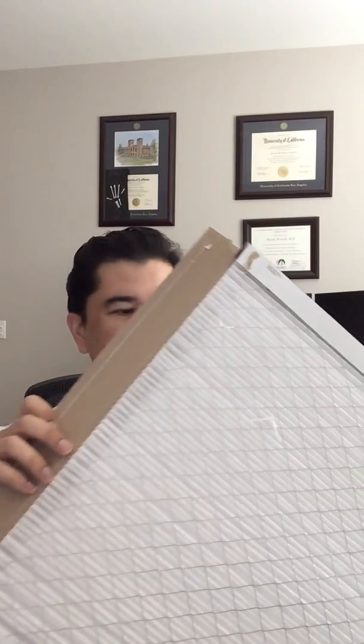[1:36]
So these are the materials you need. One, like I said, the Filtrete filter, and two, you will need some rubber bands, preferably flat ones. And then also got from Target one of these letter hanging folders, and that'll provide a bridge piece across your nose that will allow you to kind of customize your respirator for you.
So this is actually, my wife was able to provide this. This is a 3M N95 mask. And as you can see from this design, it is basically a long piece of fabric that's folded over itself multiple times. And then it has these type of closures here. And it also has a little metal portion here to adjust to your nose. And then finally, you also have the rubber bands that are stuck together with a staple on the sides.
Okay. So to start off, you just take these Filtretes and you just peel this thing off like here. And once that's peeled off, it's actually not too bad. There is this wire, chicken wire, that's stuck onto it. You can just grab part of it and just pull it right off, very simply. Just like this.
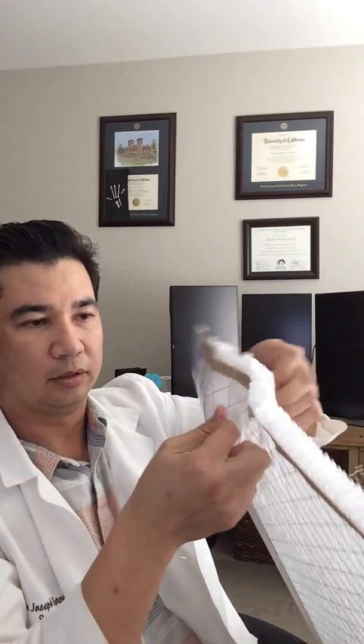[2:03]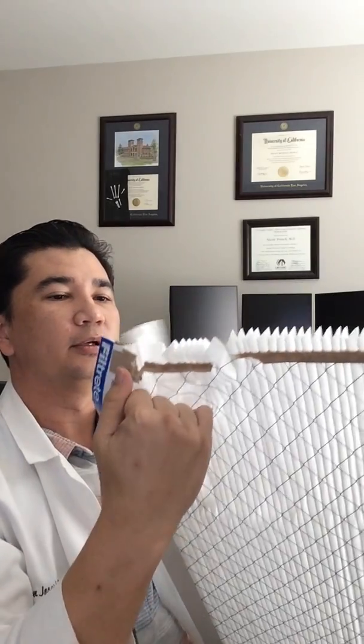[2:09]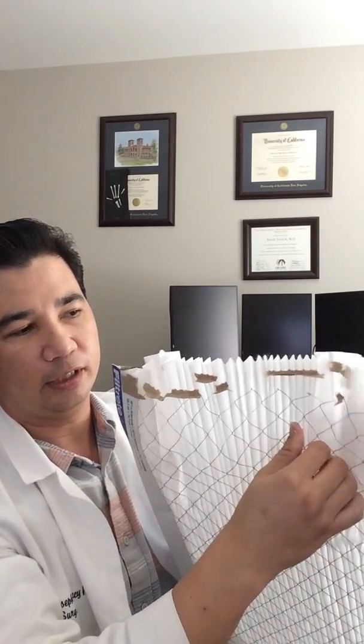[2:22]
Alright. So I've got access to the fabric now. And peeled it off. Just be mindful that some of this wire can also cut your fingers, so if you're concerned about that, you might want to wear gloves, things along those lines. At least the edges here, those are what are going to cut you.
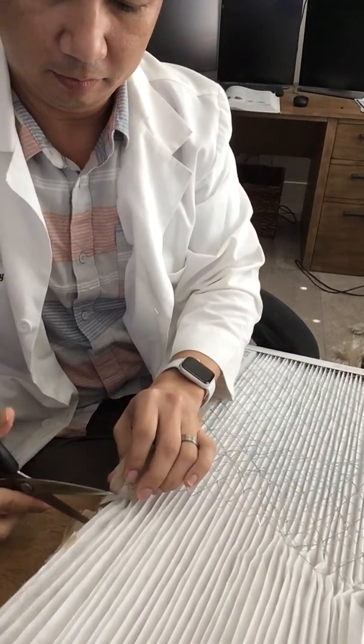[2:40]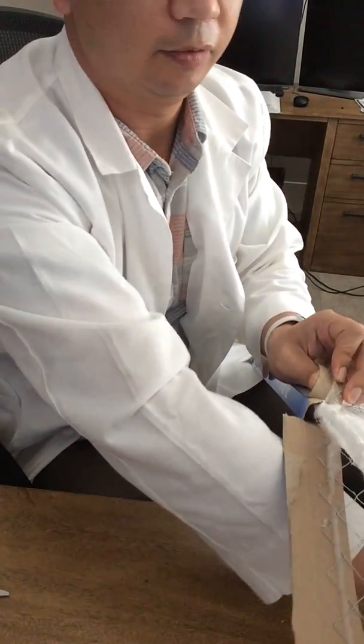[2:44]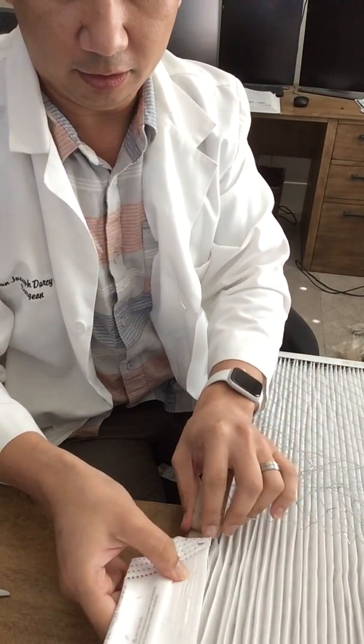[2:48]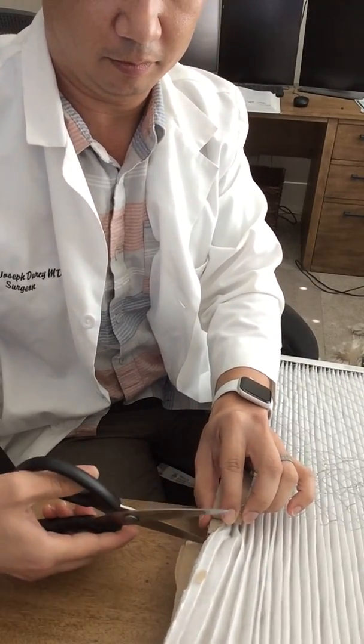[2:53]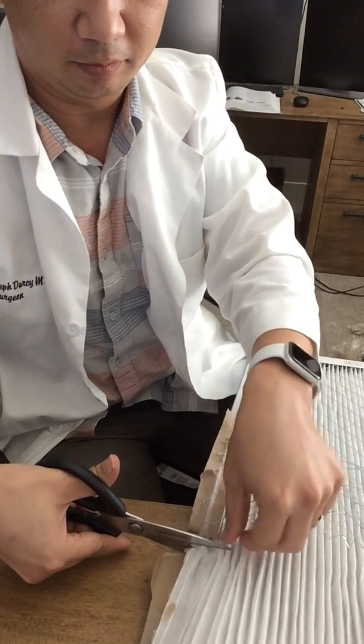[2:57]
Okay. So I have this out, and I'm going out 9 inches. I cut through the 9 inches, which I'm just going to mark as right here. I'm going to cut through.
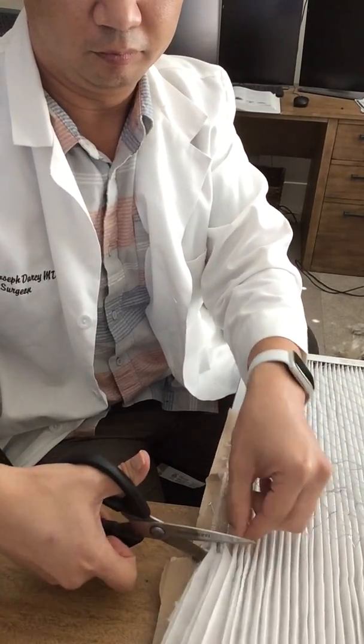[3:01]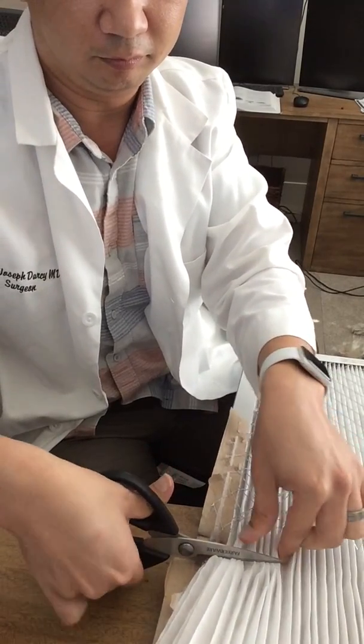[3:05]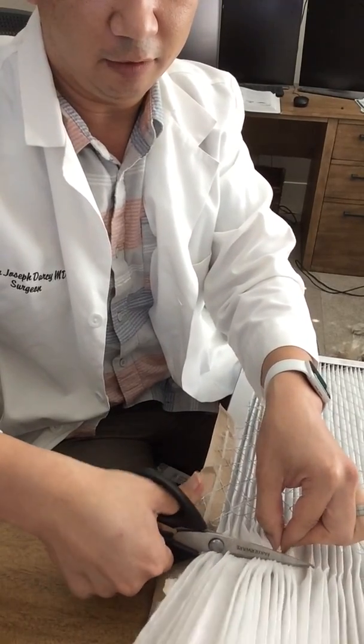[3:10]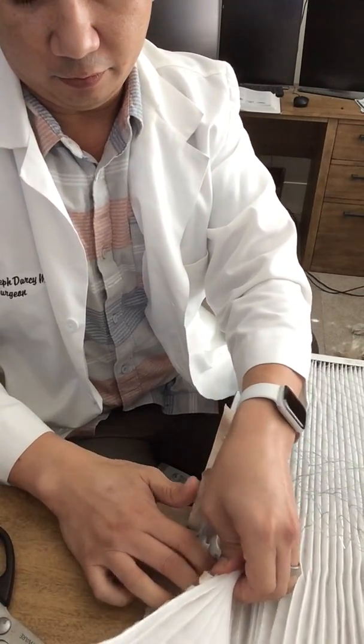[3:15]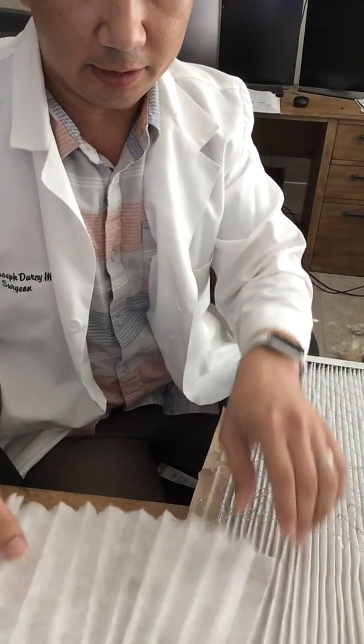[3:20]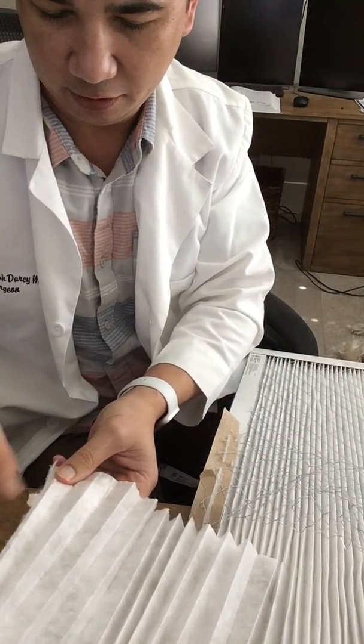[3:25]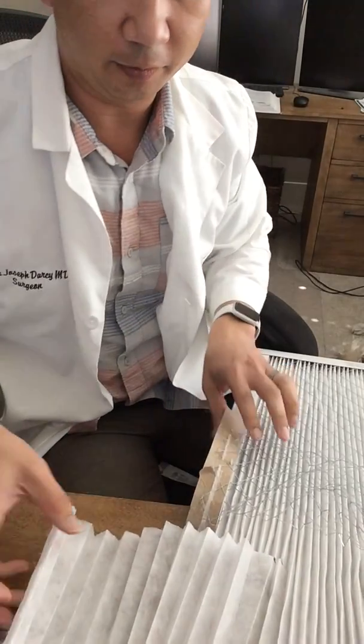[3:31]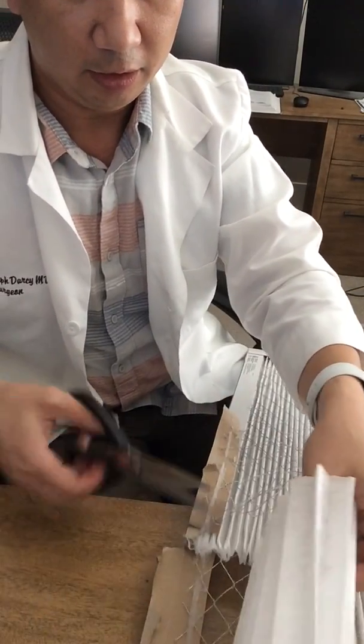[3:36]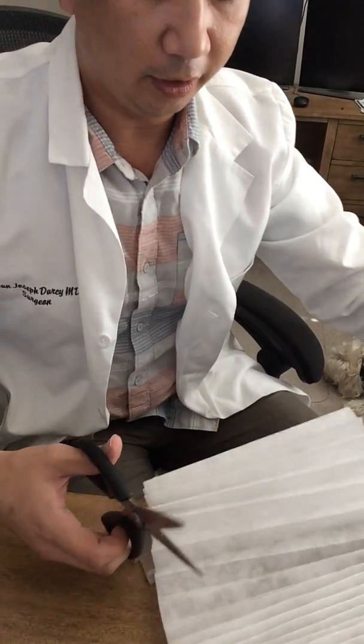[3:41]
Now, there was some interesting controversy that I overheard on the news about distributors, the 3M selling to other countries, or for United States. Well, you know, it's a pretty difficult situation for all individuals in regards to things. And I think that at least you will be safe during this time when it's really hard, when other countries or entities are outbidding you in terms of getting these masks.
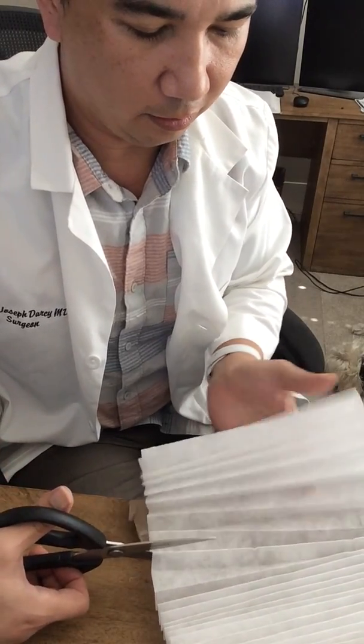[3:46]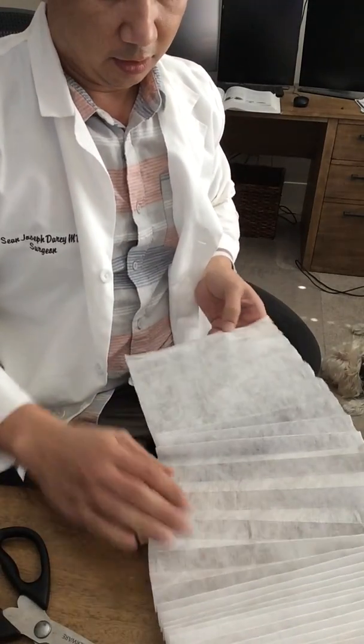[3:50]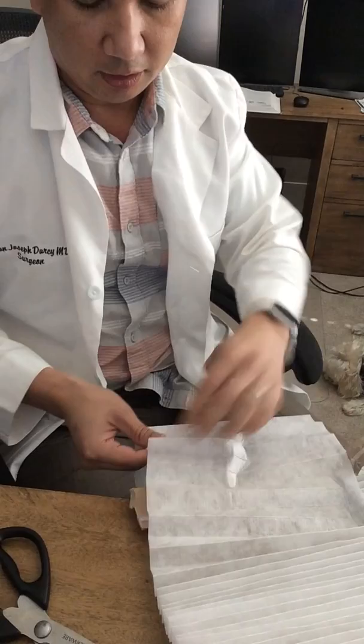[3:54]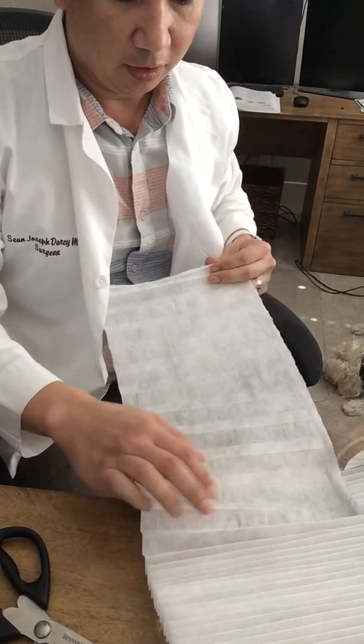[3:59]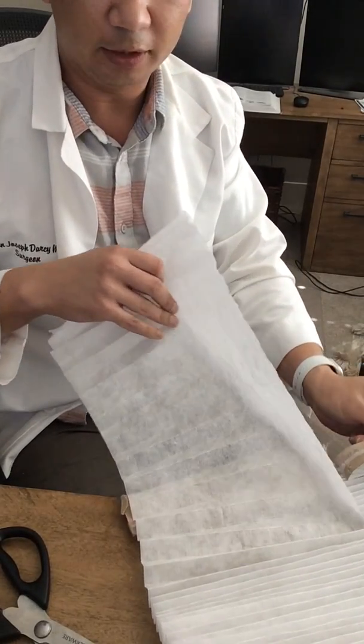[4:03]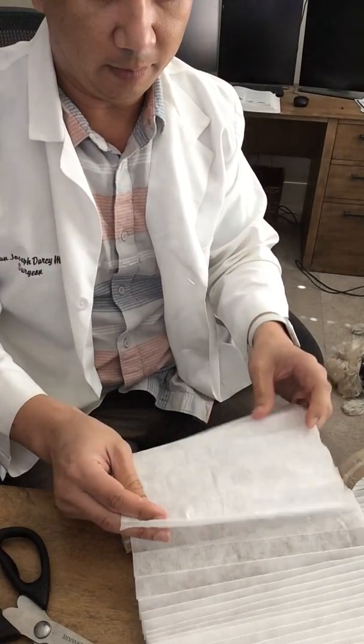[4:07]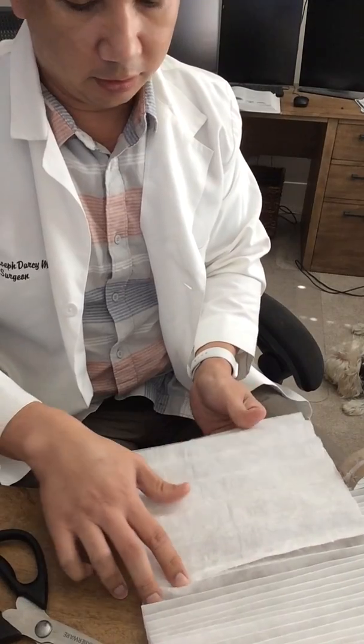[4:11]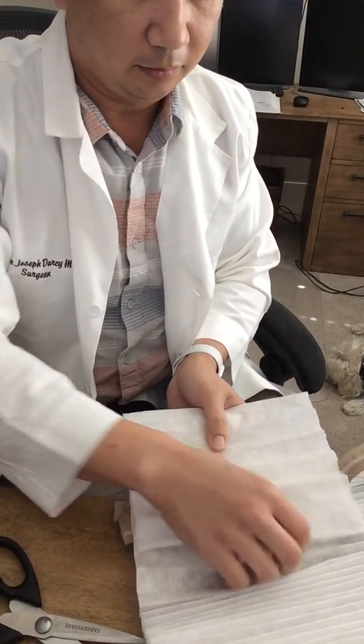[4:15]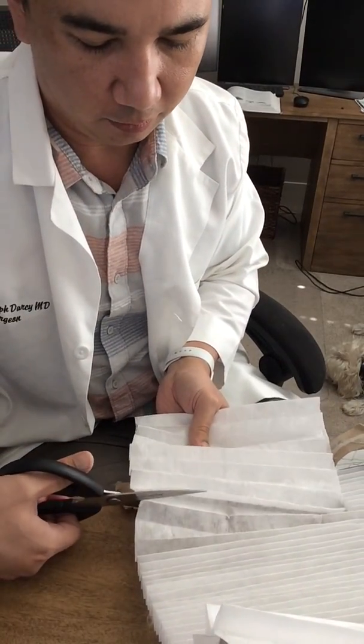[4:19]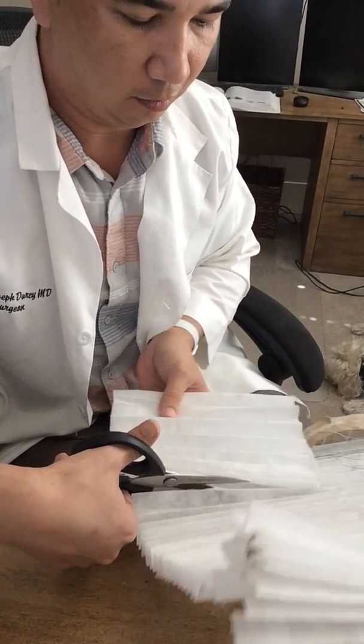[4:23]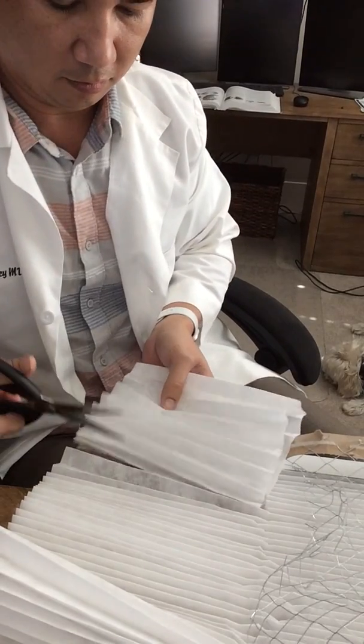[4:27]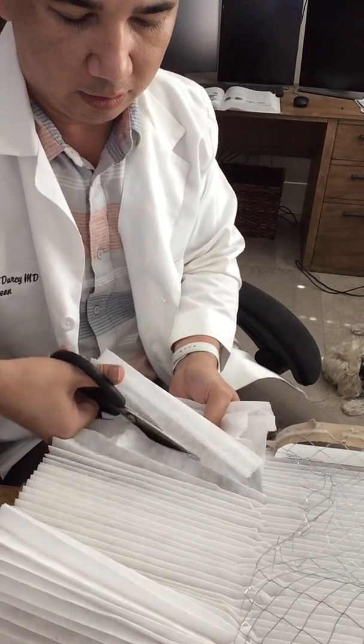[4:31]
All right. So let's see. So, like I said, 9 inches one way, and then 6 times 2 at least the other way. So generally, like to see at least 12 inches of mask. Okay. Now that we have it here, I just cut through. Got the mask here, mask materials.
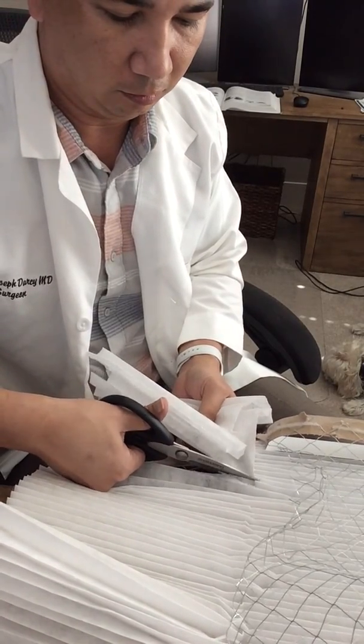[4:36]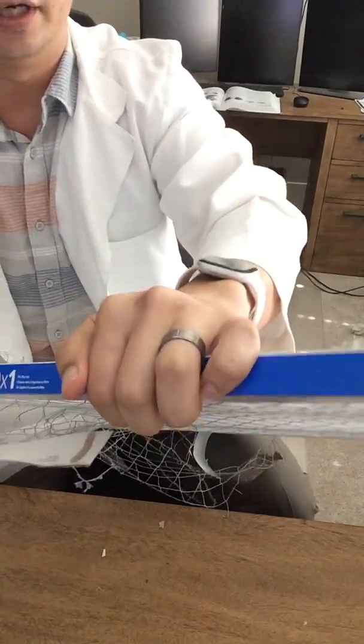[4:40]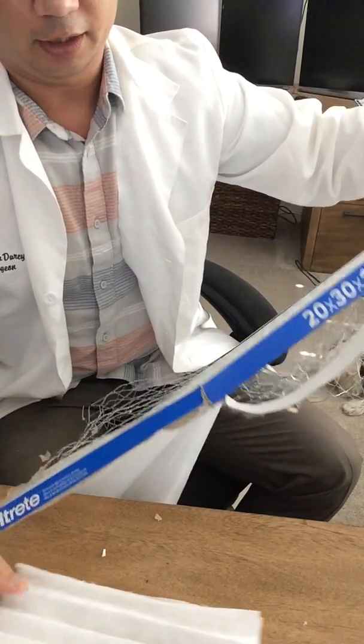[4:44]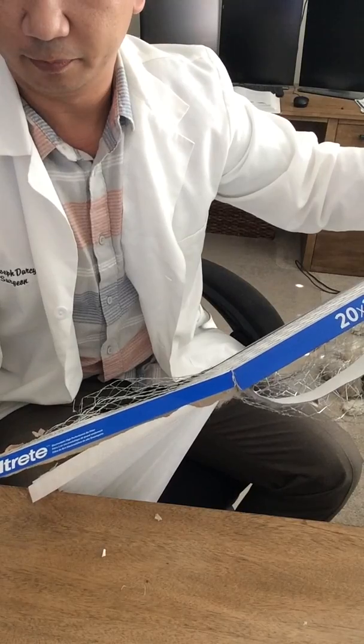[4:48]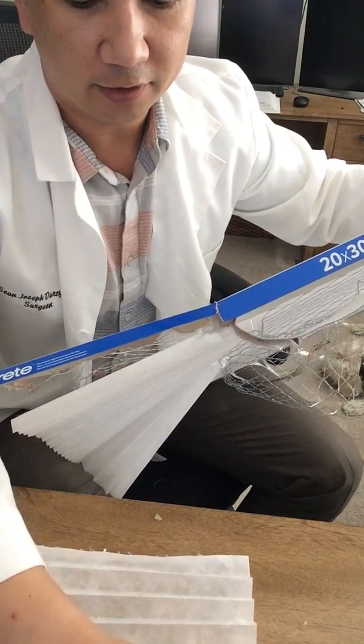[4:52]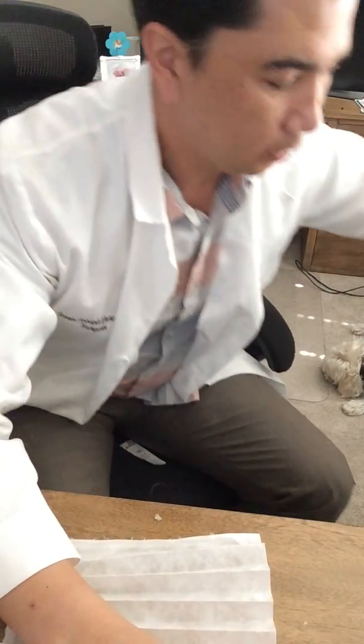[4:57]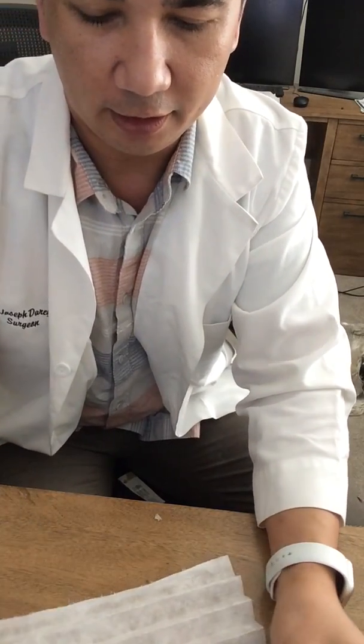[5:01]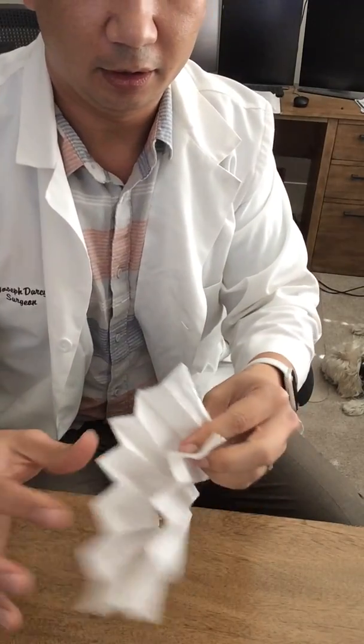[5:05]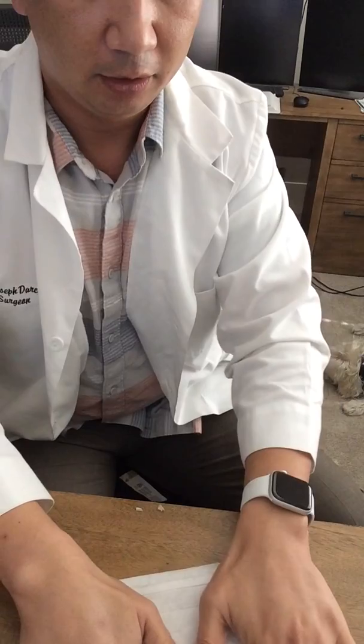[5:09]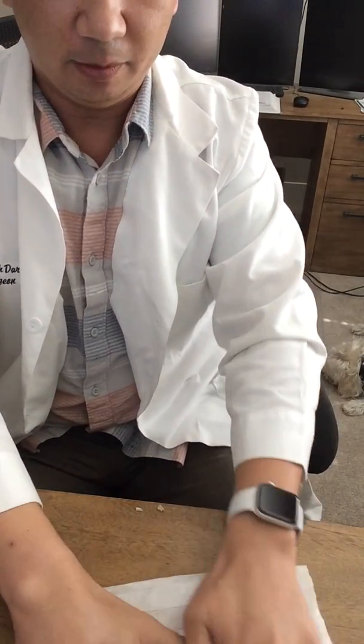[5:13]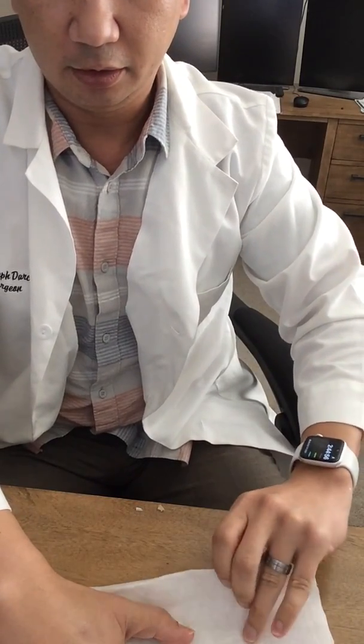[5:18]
You can see through here, there's an arrow. Generally, you want to have the aspect that's not as fabric-y facing the outside, okay? So, with that considered, is facing the outside, we can make the mask going with the fabric aspect towards the middle. Okay. So with that through here, we've doubled it up, and then we're also going to double it up again.
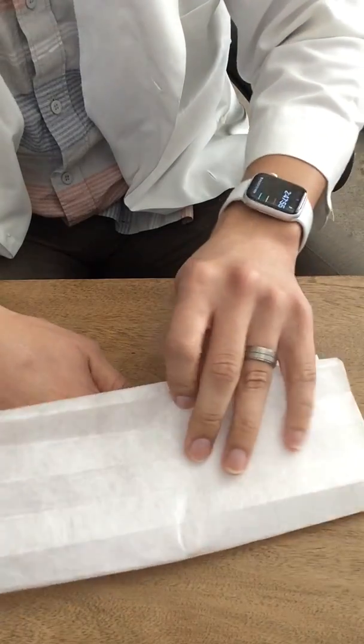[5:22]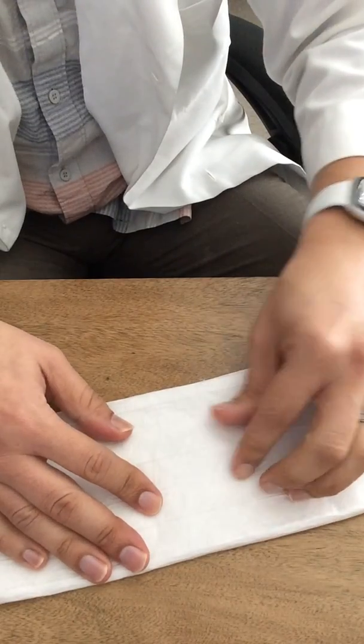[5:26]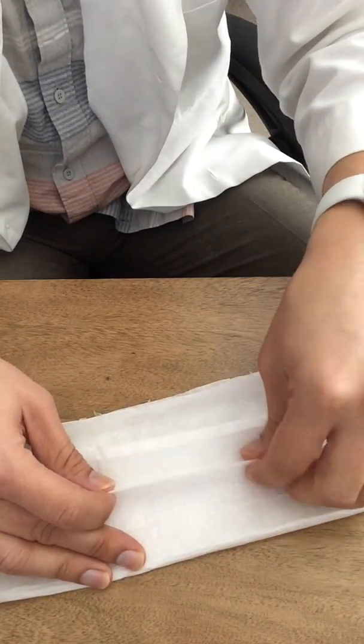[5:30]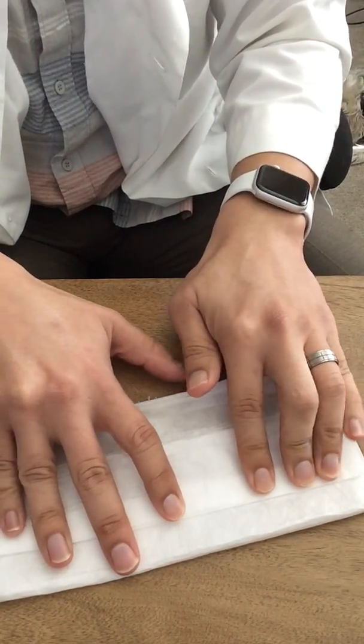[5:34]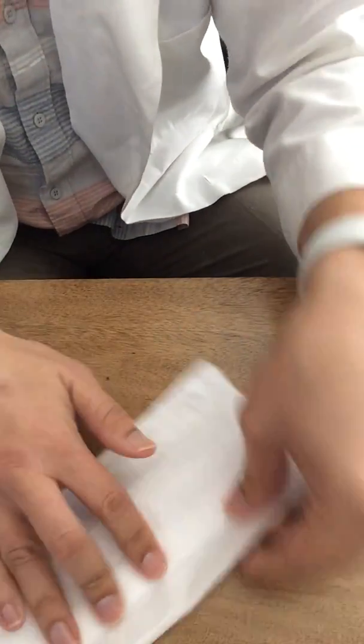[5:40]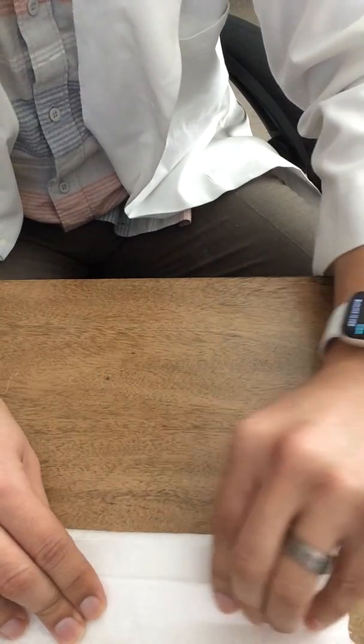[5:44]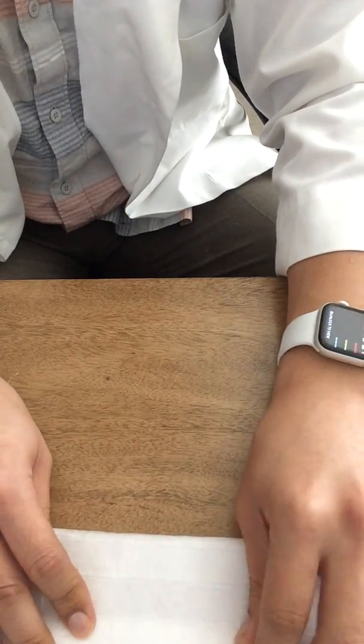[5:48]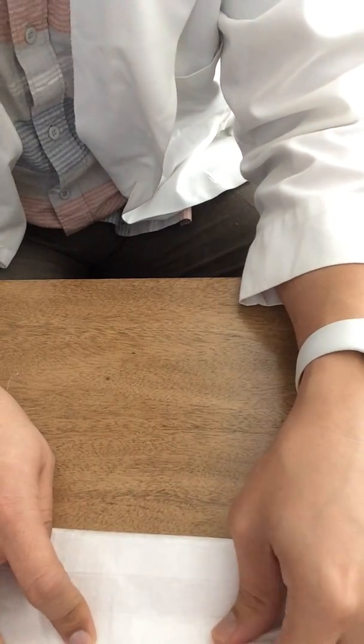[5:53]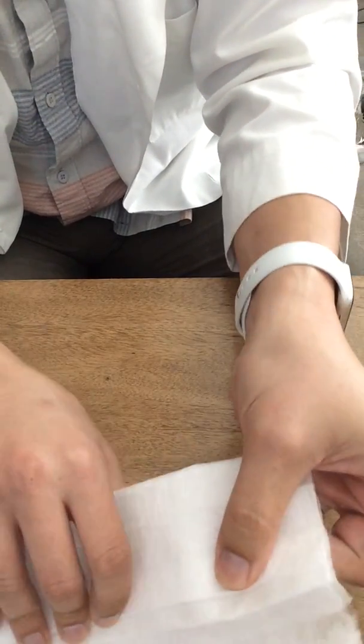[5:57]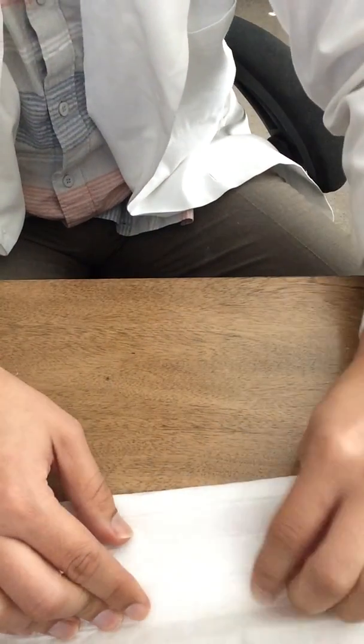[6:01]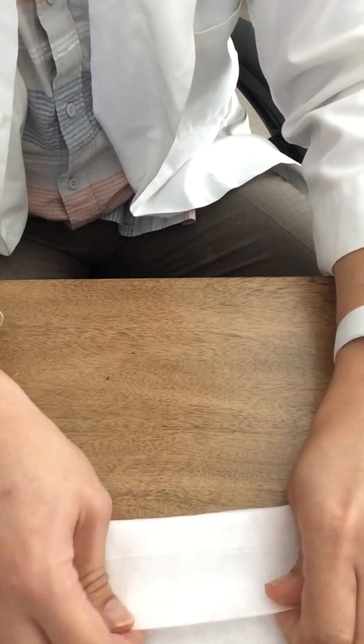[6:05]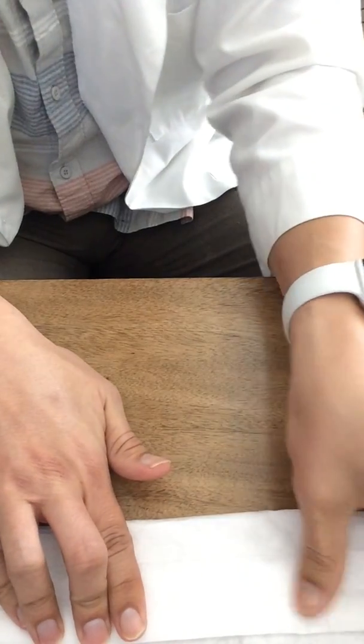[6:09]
And then with the fold in half, you're going to actually pull back times one. And the nice thing about this filter, it's already folded for you. And then the fold is going to actually be facing towards the back aspect of it. All right. And then the same thing over here. Flip it over. And the fold also is going to face towards the back. Right.
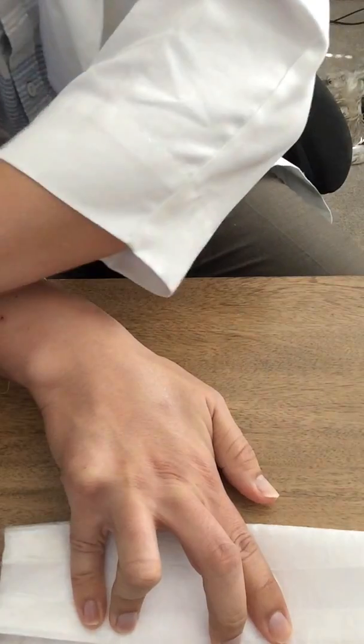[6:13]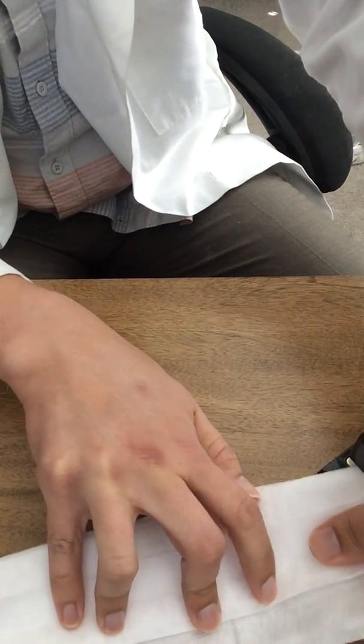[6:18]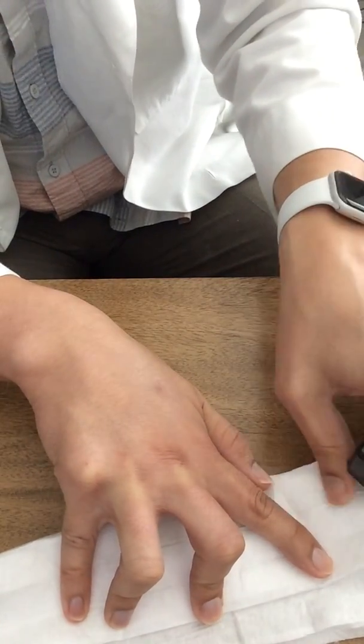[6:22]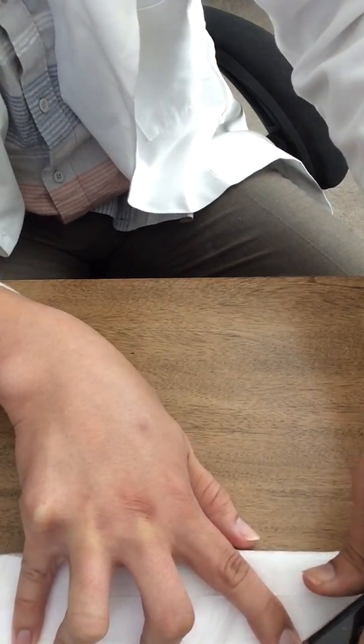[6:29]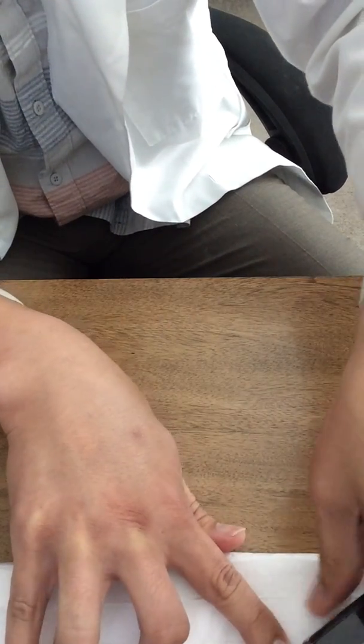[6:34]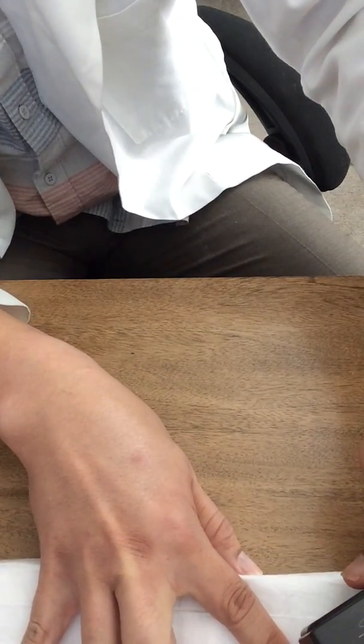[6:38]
So with that, you get your stapler out and you just start stapling. In the motion as of right here. First I want to get the fold down. Okay, so I'm gonna staple just like that. And then another fold. I'm gonna keep going until I get a kind of a straight line of staples going towards the front.
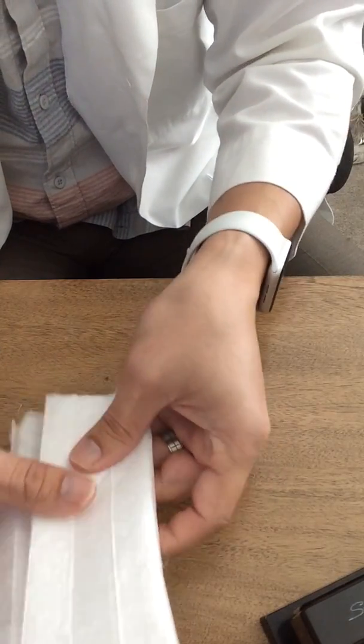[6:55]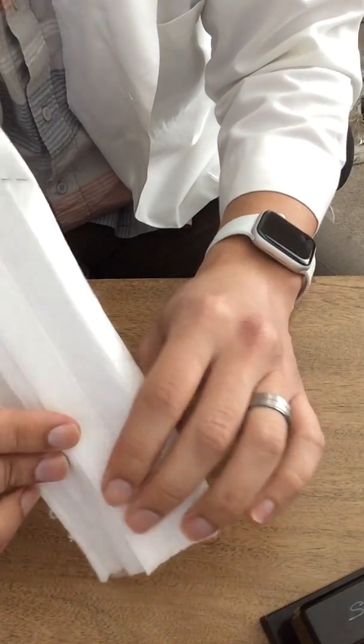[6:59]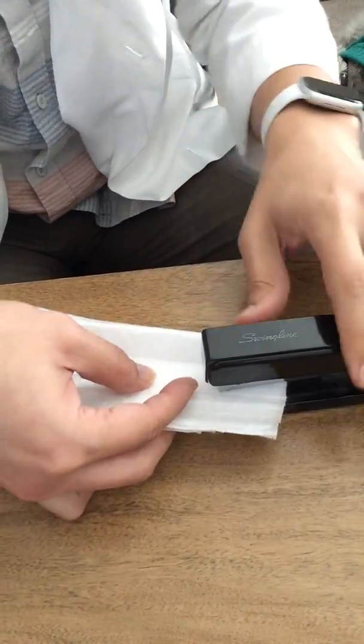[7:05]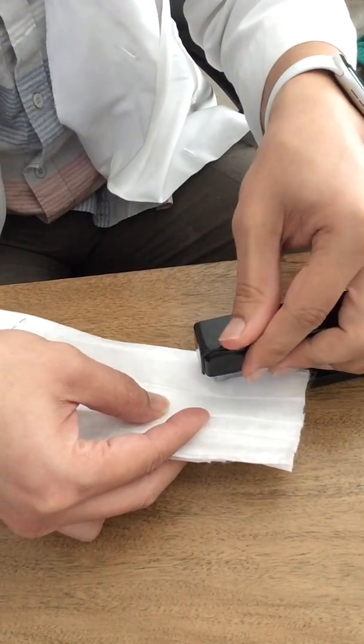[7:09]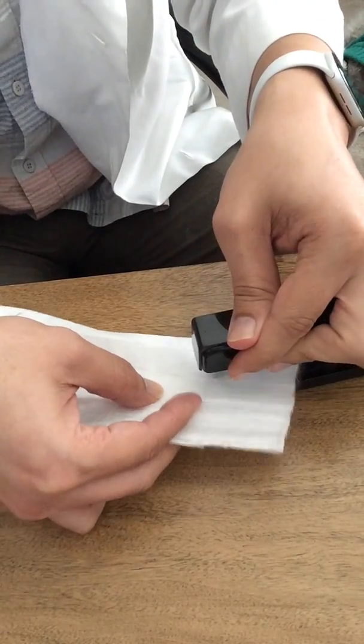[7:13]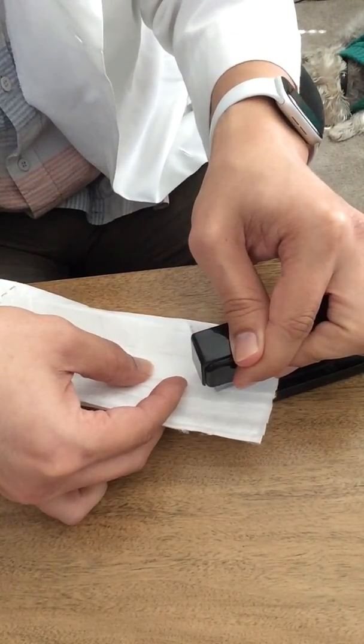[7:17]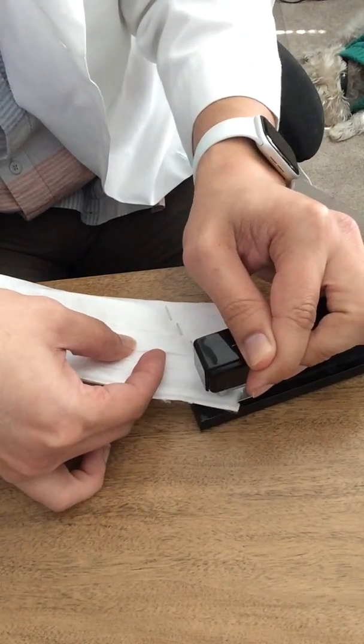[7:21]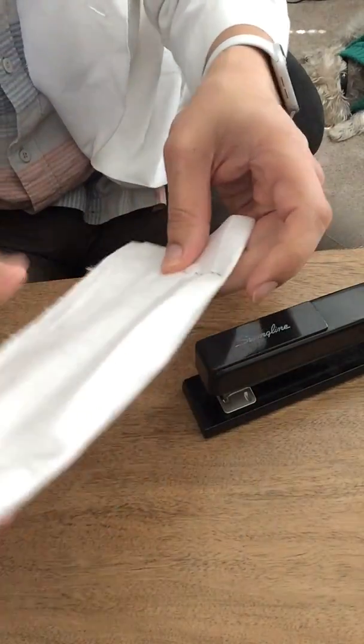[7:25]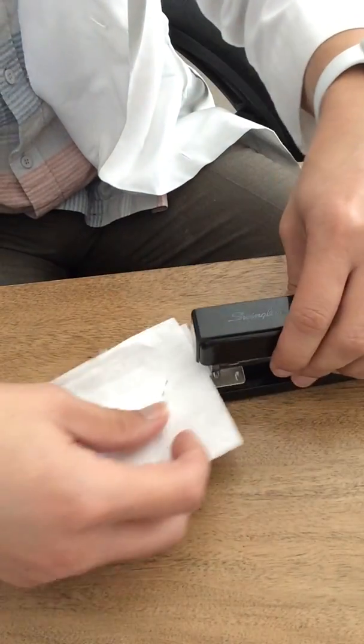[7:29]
So same thing on the opposite side. We're going to keep going and keep the fold here. So fold through here and keep the staple going like so. Kind of similar over here. I'm just going to staple just like this. Okay. So now we've got a mask in some respects, and it opens just like so.
Okay, just like so. And then what we can do is, we're going to take this and put a couple rubber bands on the sides. So what you need to do is cut rubber band. You're gonna probably need to cut four if you're gonna use the ones that I got at Target. It's these types. They're just conventional rubber bands. And then just make a square knot to make your connection. You really only need two in a line to make it.
So make sure your knot is square. So it's a square. You might need to triple knot it sometimes. Actually, there we go. Okay. So that's set, and then we do the same thing with another set. Is I cut through just like this, right through there. And again, another square knot.
If you do a square knot, you only need to tie it twice. So that is square. Make sure it's nice and tight. And then what you'll do is you'll take both of these rubber bands, take the flat edges and double it up on one side. So now that you've doubled it up on one side,
administer the staple, and that'll allow you to have some place to anchor your straps. I do not recommend hole punches. I've tried that one before. Didn't work. I would say staple 3 times. Okay. So I'll staple 3 times, just like so.
All right. And then on the opposite side, I'm going to do the exact same thing, which is I'm going to double up on the rubber bands. And again, place it just lengthwise along your respirator. So I placed it lengthwise, so you can kind of see here. And I've doubled up on it. Okay, so you see that those are 2 doubled up right there.
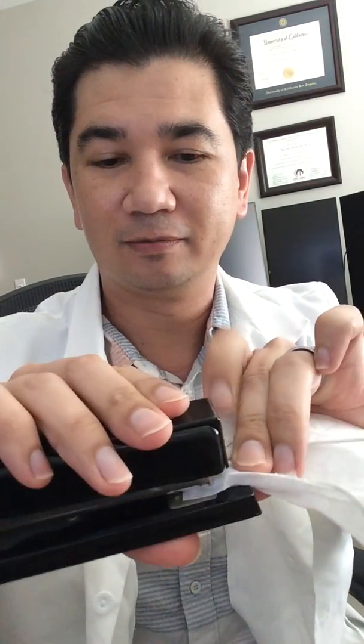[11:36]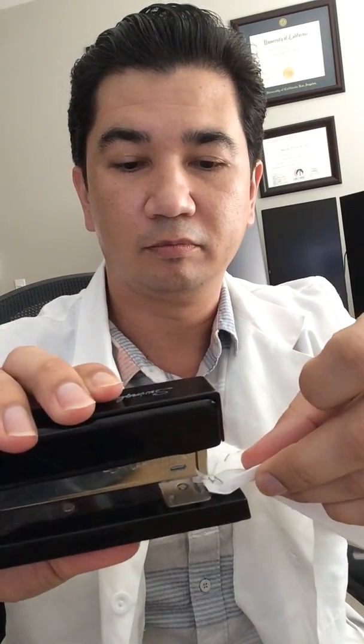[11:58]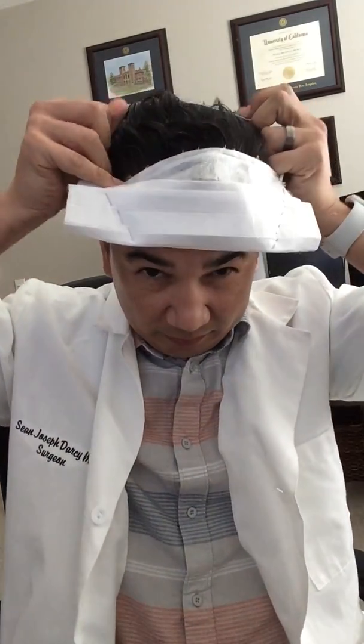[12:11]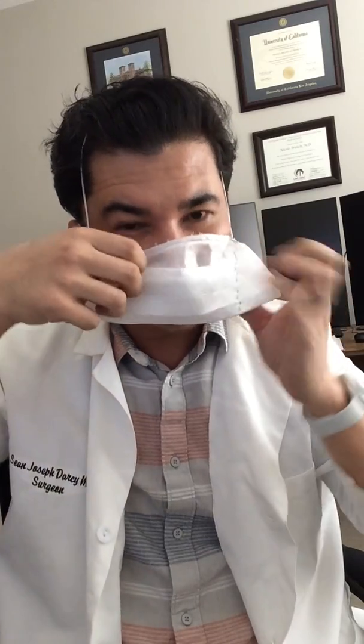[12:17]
And I'm just going to take this stapler and watch your finger. And then, so that was 1 staple. I need 2 more. So 2 and 3. It should be good. So with my respirator available, I can now place this over my head. Just like so.
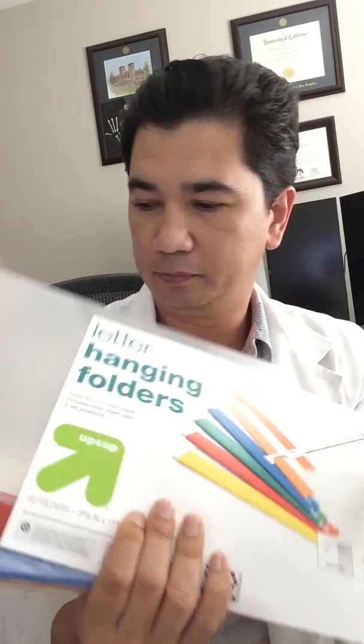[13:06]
Okay, just one more thing is you actually need to as well get the metal piece to stick in there. So that's one thing you have to also do. So I'm going to show you how to do that. That aspect comes from these hanging folders that, like I said, you get at Target or any office supply store.
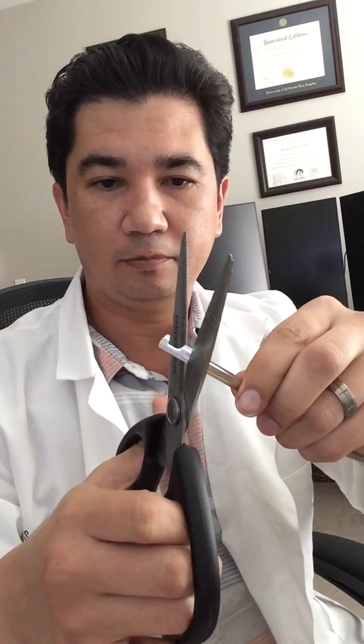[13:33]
And what you do is you make sure to, according to this one, looks like it's about 1, 2, 3, about 4 inches. So that's what I would give yourself, about 4 inches to cut off on yours. So you just cut through here and try to round it as best you can, and get really strong scissors too. Just round it so that you don't cut yourself or anything like that. And then once again, I rounded it, and then I kind of go through here and I'm going to cut. All right, now we've got two sides.
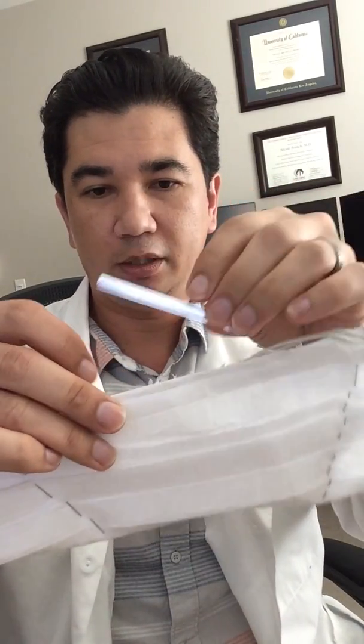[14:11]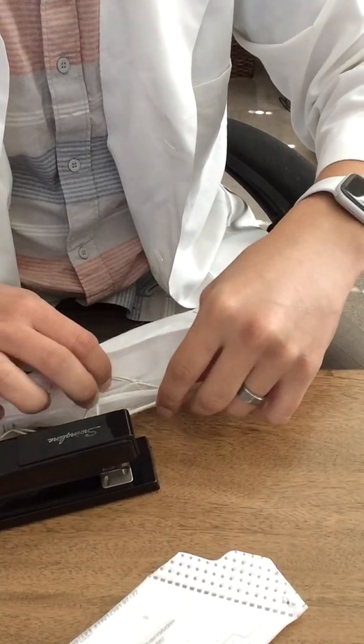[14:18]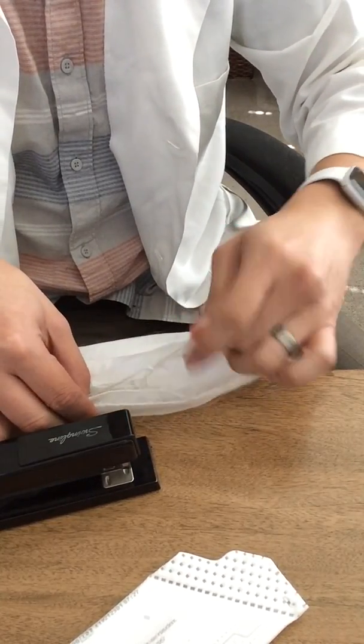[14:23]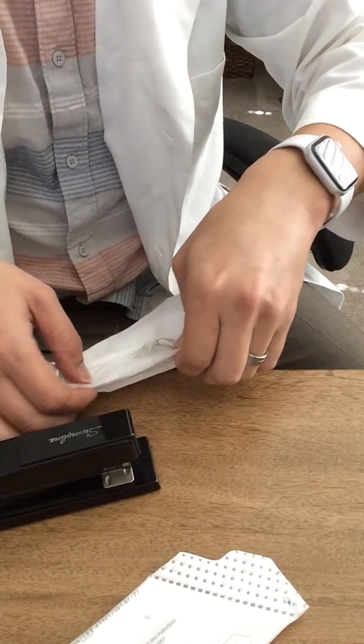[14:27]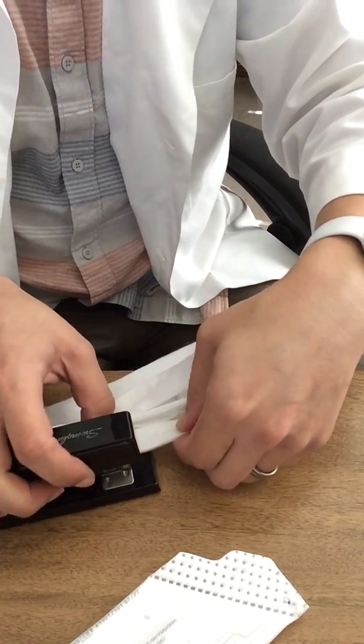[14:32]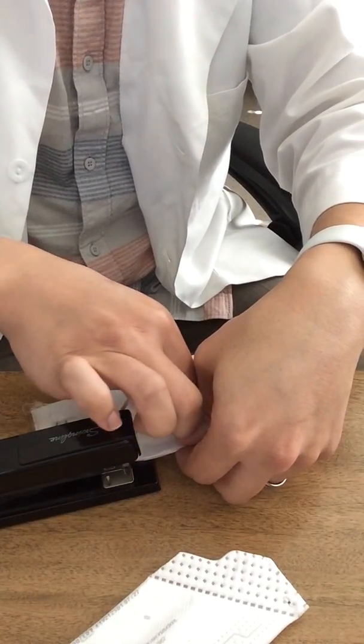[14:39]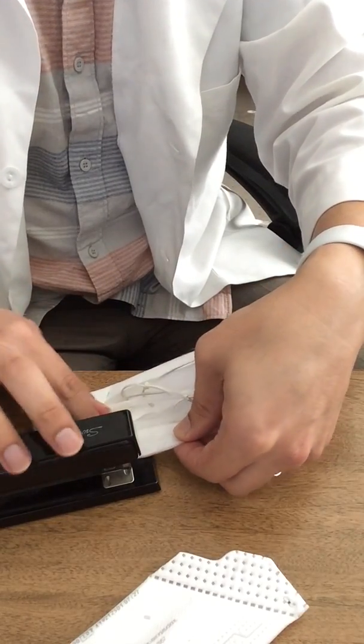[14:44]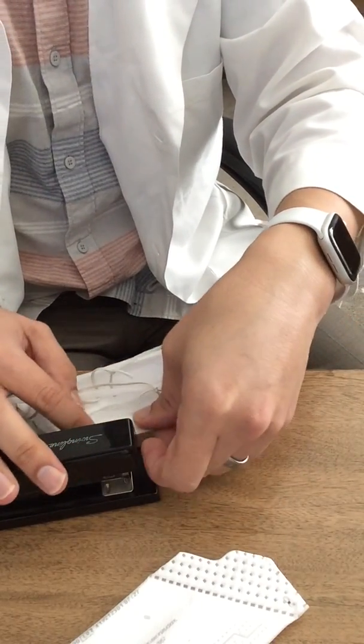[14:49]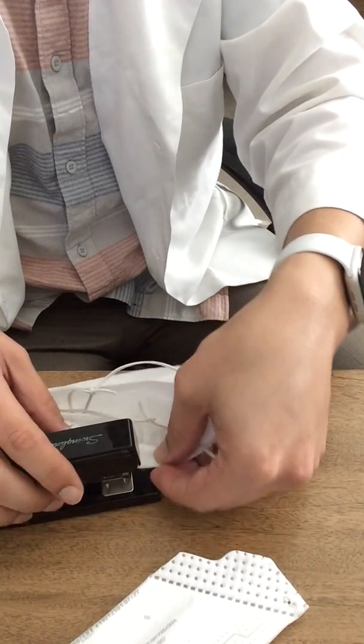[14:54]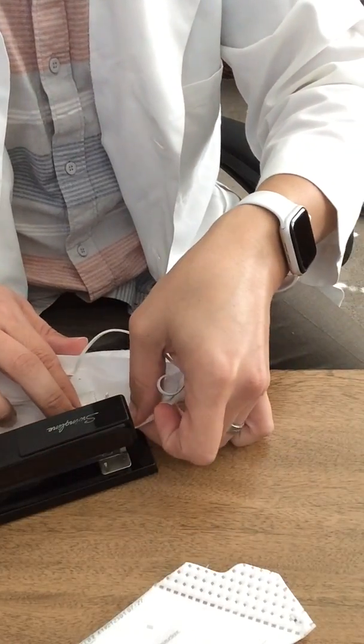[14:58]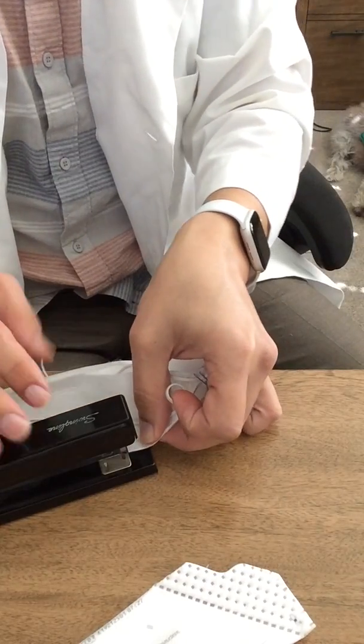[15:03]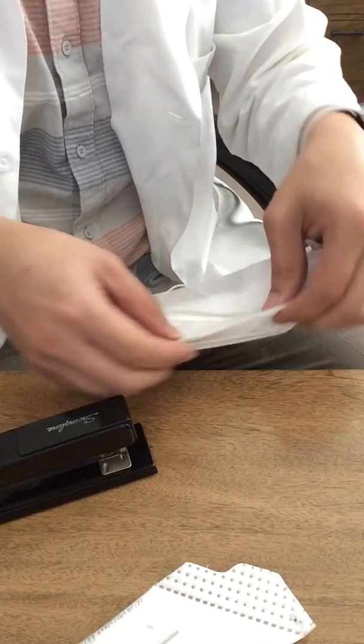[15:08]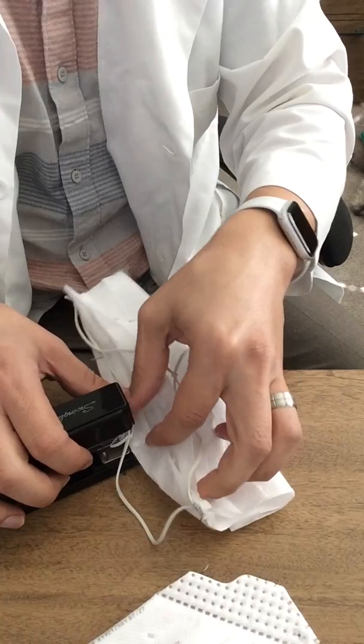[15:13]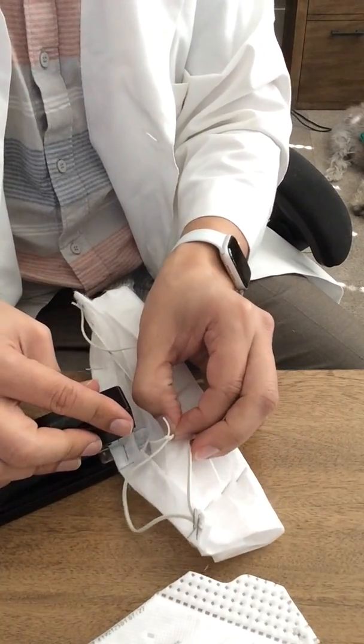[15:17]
And what you can do is you take this, you slide it in, and you actually double over. Just staple it in. So mine just kind of came out. So, again, hit the edge. Make sure not to get your rubber band stuck in there, like I almost did. Okay, and you're going to do a second staple over here. And that just keeps the metal stuck in this specific spot. And then you're going to need to also staple the front aspect as well so that it stays in place. Otherwise, it will shift. It will move.
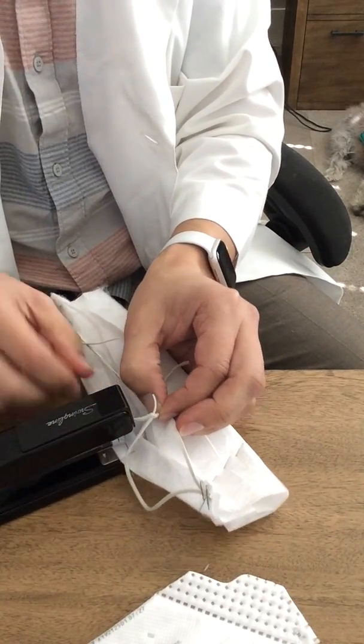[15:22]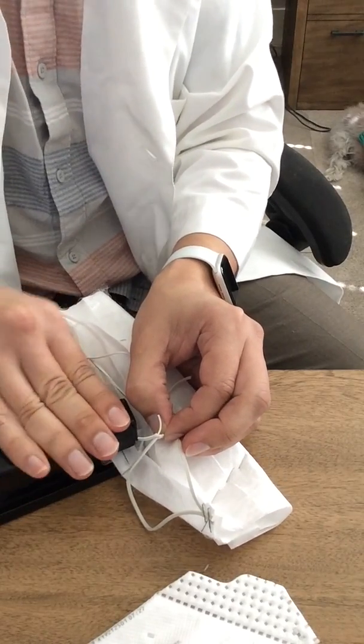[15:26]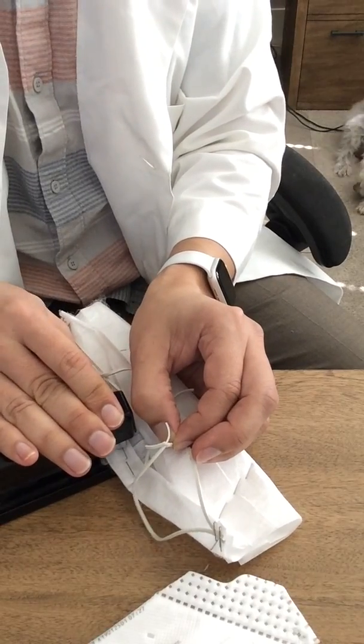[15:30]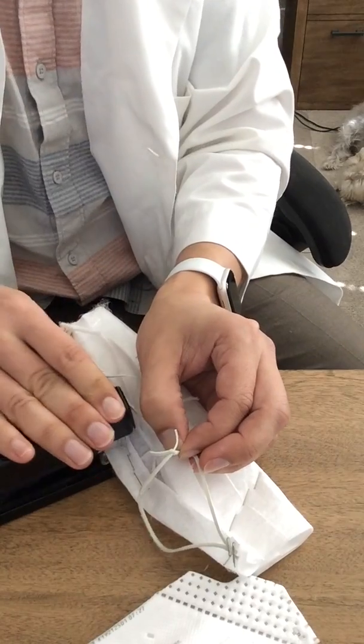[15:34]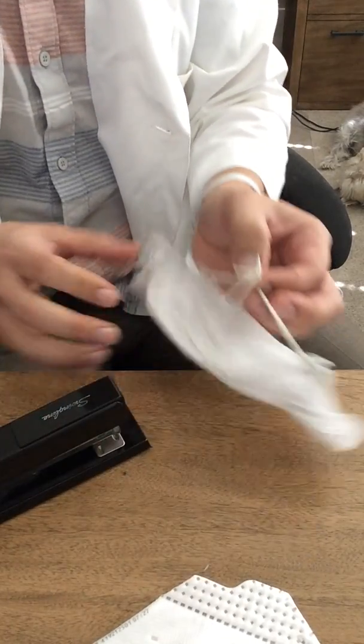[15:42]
So I would say about maybe 4 or 5 staples should hold it in place. Yep, some people are sewing these things. Stapling is so much easier in terms of everything. And the great thing about these filters is that they are advertised to last 3 months, so you can wear your mask for 3 months.
Okay, so let's test out our mask. Looks like one of my staples kind of came out, or was kind of on the edge, so I'm just going to take that one out. Okay. So once again, I take the edge on the side. I just put a little staple right there on the fabric, so that way it stays really secure. Okay. So again, I take the mask.
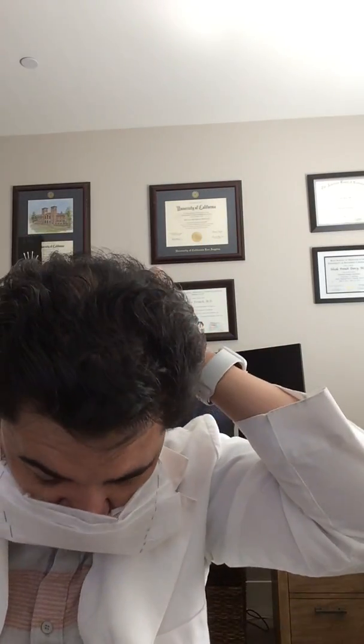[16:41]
The way you stick it on is you actually just slide it up on top first. One strap should go above on the top of your head. One strap to the back. Then with your mask, you need an airtight seal. That's what they want. So you take your metal aspect with your nose bridge. You can bend it now. And let's see, you make some adjustments so that you get the airtight seal.
So now I have, as you can see, airtight seal redundancy. Okay, I did make this mask. It's basically just a copy of 3M with staples. You can do this at home. And I'm able to breathe through this, which is really nice. I don't have to wear any scuba gear. Well, anyway, I hope you enjoyed learning how to make your own mask.